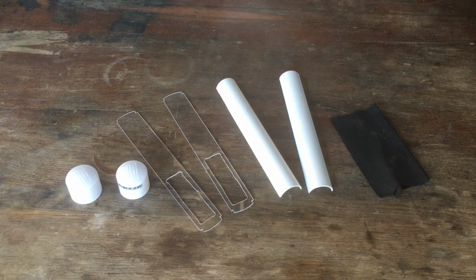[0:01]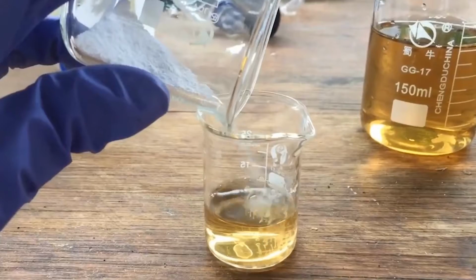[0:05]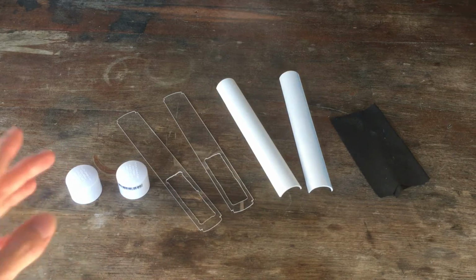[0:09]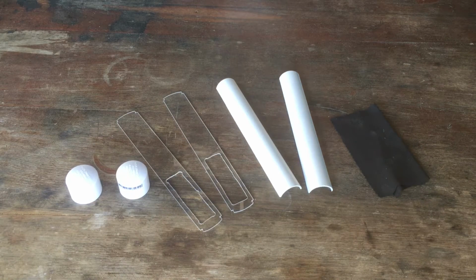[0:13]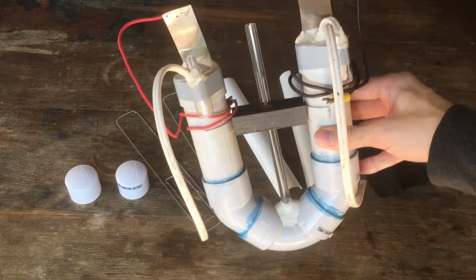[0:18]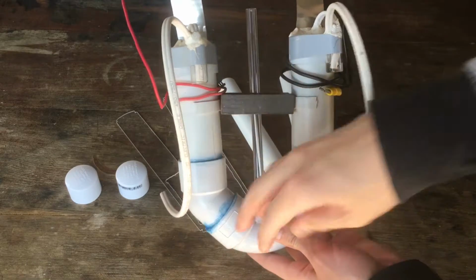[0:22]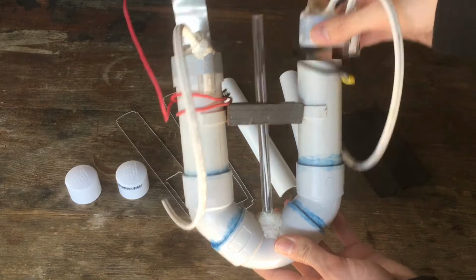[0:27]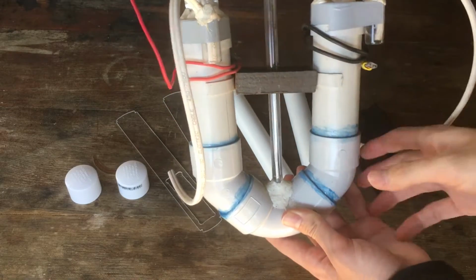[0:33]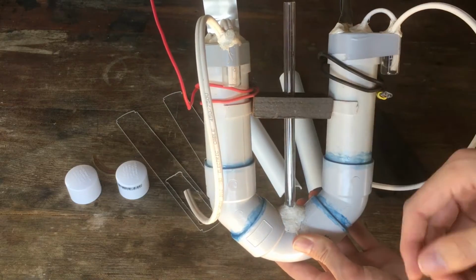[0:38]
Today what I want to do is revisit a really old project of mine. A couple of years ago, I think we put together this thing, which is a hydrogen generator, an electrolytic hydrogen generator. So we fill this PVC pipe chamber with sodium hydroxide solution. We have nickel electrodes which sit in the solution, and by passing current through the cell, we're able to generate hydrogen gas and oxygen gas off the cathode and anode respectively.
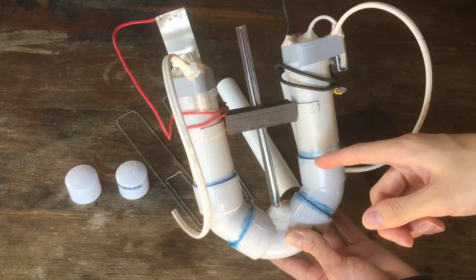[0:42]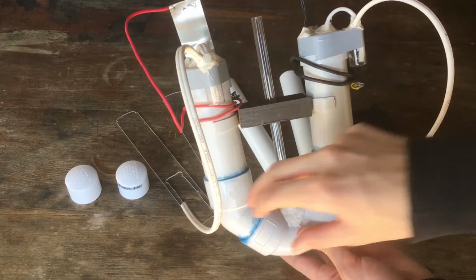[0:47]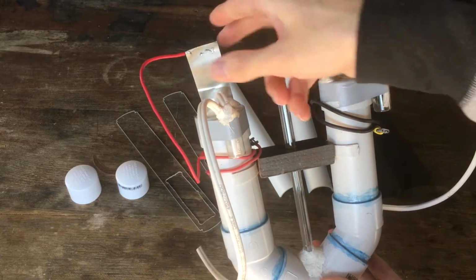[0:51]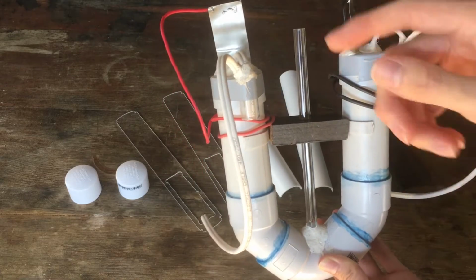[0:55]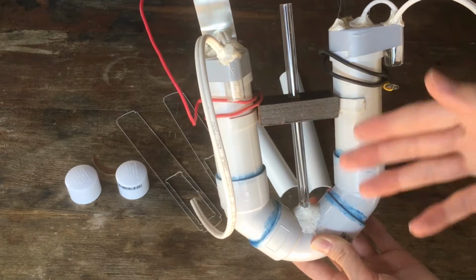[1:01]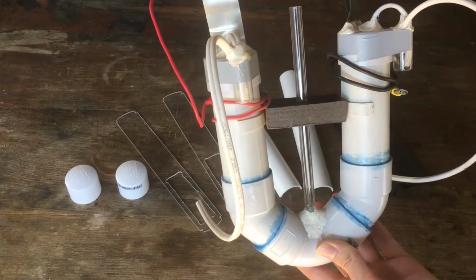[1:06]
Now, this was a relatively good design. I had a piece of fabric in between the two electrodes to stop the two gases from mixing, and the nickel electrodes that we were using did an excellent job at not corroding under the oxidizing conditions of the anode potential. I have used it a couple of times and it has worked for what it was intended to do, make hydrogen gas and oxygen for that matter.
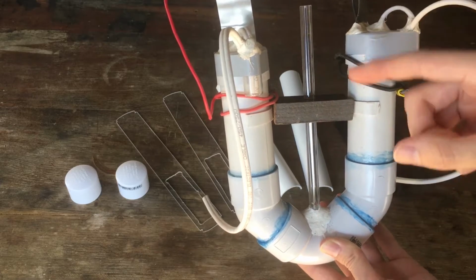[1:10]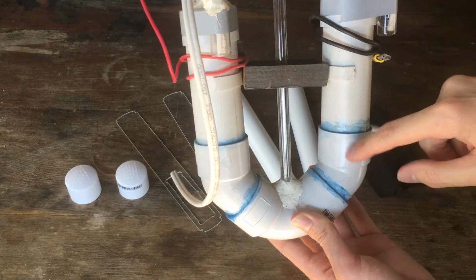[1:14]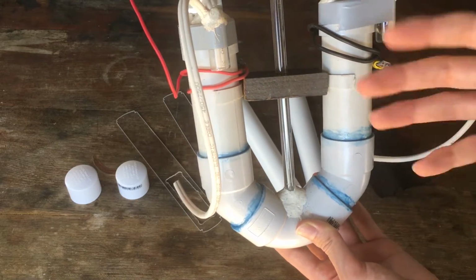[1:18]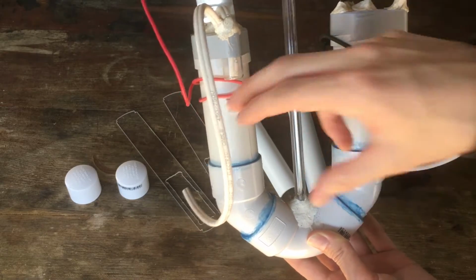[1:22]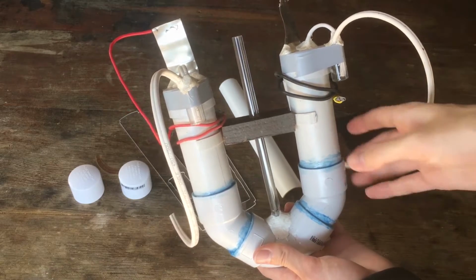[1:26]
However, the efficiency of this thing isn't great. Since we have a relatively large distance between the anode and the cathode, the resistance of the cell is higher than I'd like. We were able, I think from memory, to put a few amps through this thing at 5 volts. But in my opinion, I think this thing looks a little bit clunky, and I think we can do a much better job in terms of efficiency if we build something a little bit smaller than this.
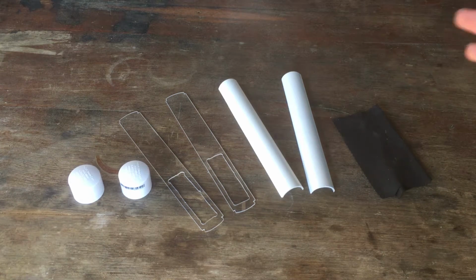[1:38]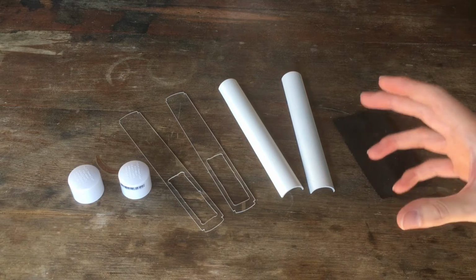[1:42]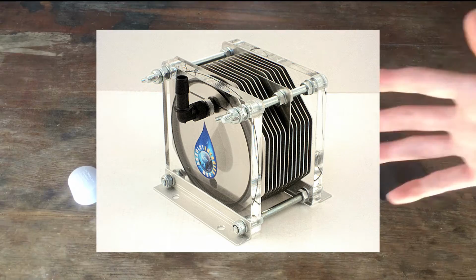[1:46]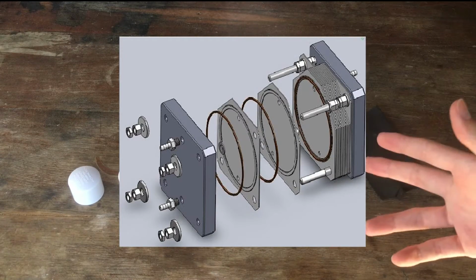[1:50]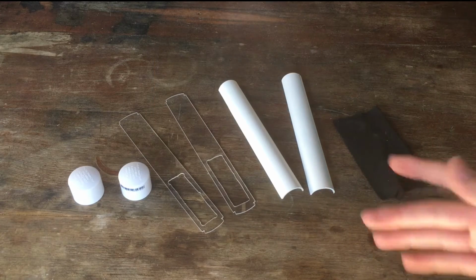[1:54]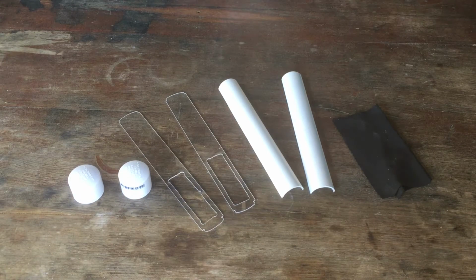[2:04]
Now, if I really wanted to generate hydrogen with a super high efficiency, what I could do is build what's called, I think, a dry cell. Those things are capable of generating a lot of hydrogen at a very high efficiency. However, to build one of them, you need a fair bit of stainless steel, and it's a little bit tricky to get the whole thing to seal and separate the hydrogen and oxygen. So I'm not going to bother. I'm not that good at engineering, and I don't really need that much hydrogen anyway.
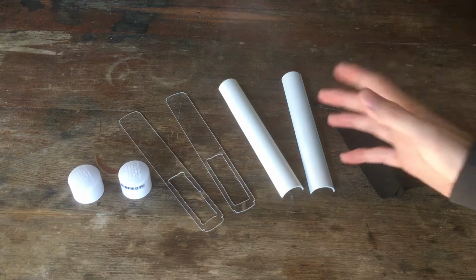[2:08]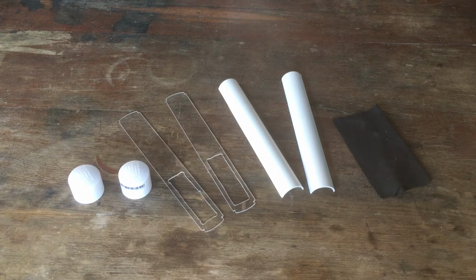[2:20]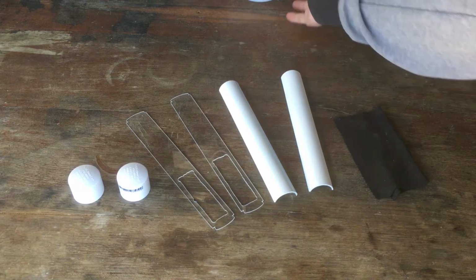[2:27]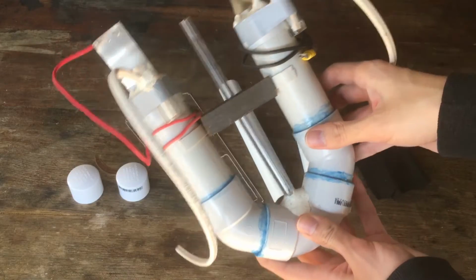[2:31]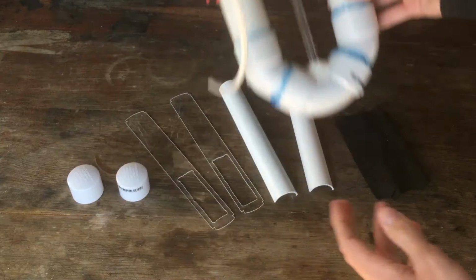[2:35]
So what I actually want to build is something with a moderate efficiency. I'm thinking maybe we want to be able to put 10 amps through the cell at 5 volts, or maybe 5 amps through the cell at 3.3 volts, something like that. And I want it to be convenient to put together, and that's what we've got set up today. What I'm currently thinking, instead of having this big ugly thing with two whole separate chambers for the hydrogen and oxygen, I'm thinking we can just have one of these chambers.
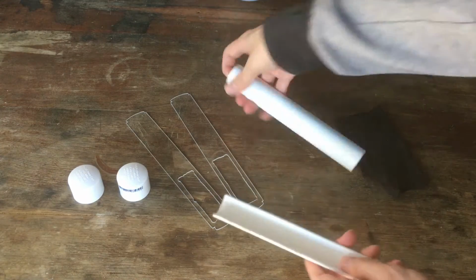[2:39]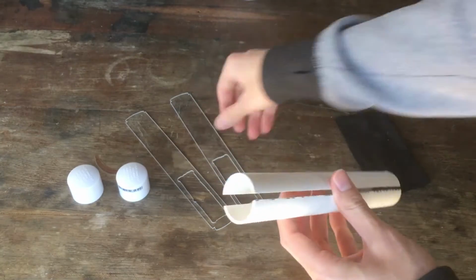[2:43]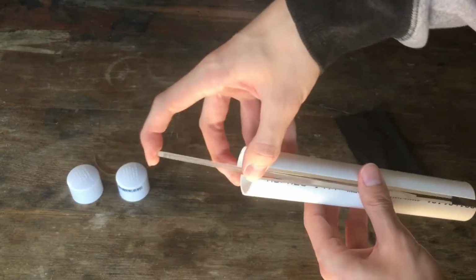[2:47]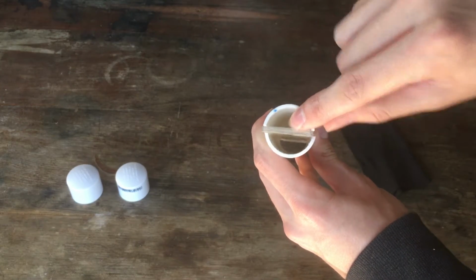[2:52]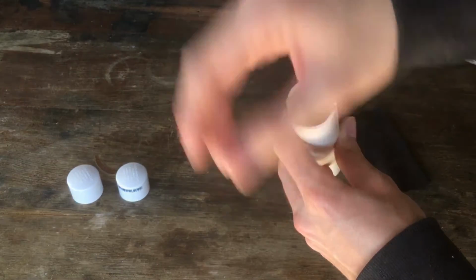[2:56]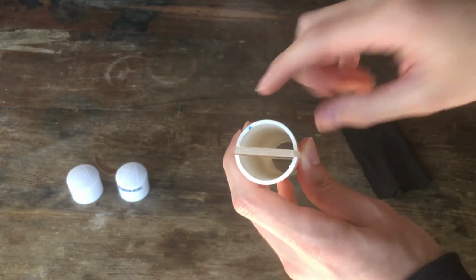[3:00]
So what I've got here is a PVC pipe cut in half, and what we can do is if we get a couple of pieces of acrylic, we can separate the two halves of the PVC pipe so that we can have hydrogen and oxygen generated separately and then have our gases taken off separately as well. So ideally, if I seal it right, there'll be no mixing of the gases.
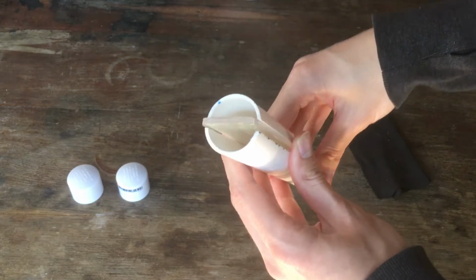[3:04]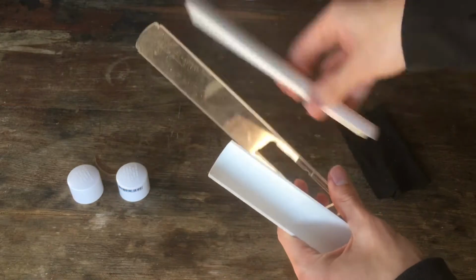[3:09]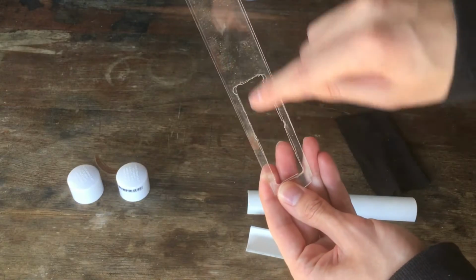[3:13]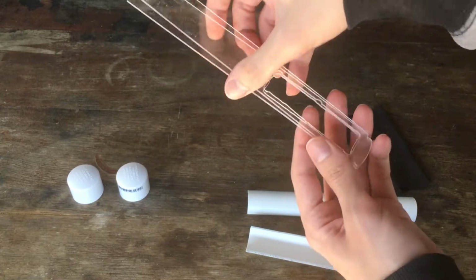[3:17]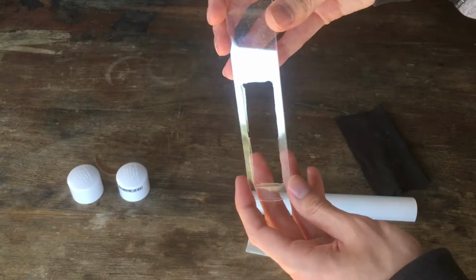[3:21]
Now, of course, we can't actually generate hydrogen and oxygen if the two chambers aren't connected in some way. So you can see in the pieces of acrylic that we have separated our chambers with, I've put a hole in here, and what we're going to do is put a small piece of fabric just between those two pieces, and that will prevent any gases mixing between the two chambers, hopefully.
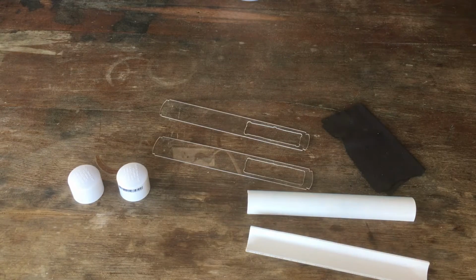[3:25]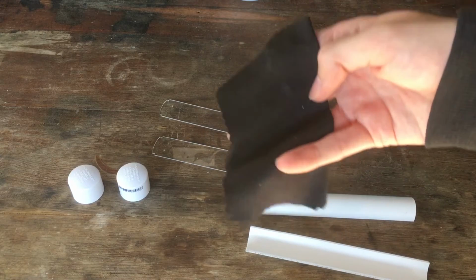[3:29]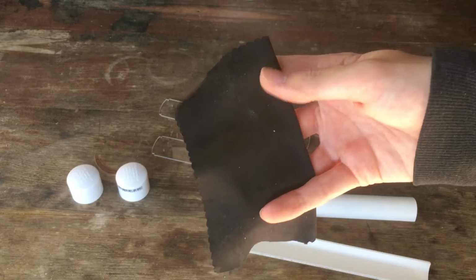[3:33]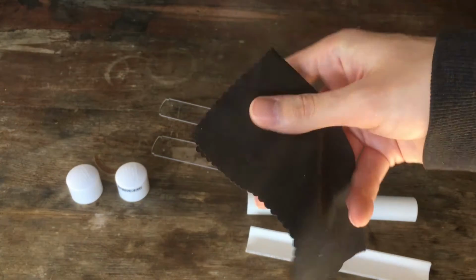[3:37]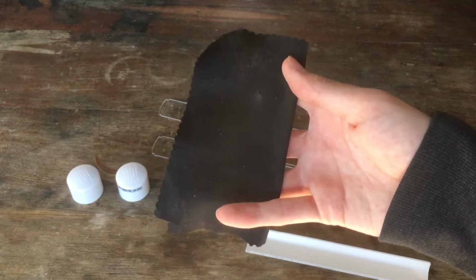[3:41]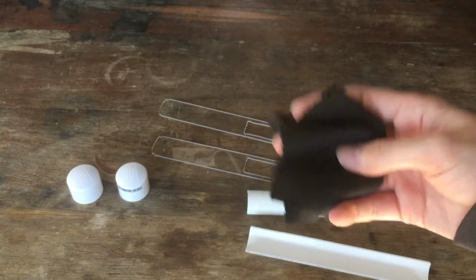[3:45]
The material that we're going to use to separate the two chambers is microfiber, because it's a very finely woven fabric which will easily stop any bubbles from transferring between the two chambers, and it's made out of polyester and nylon, which is ideal because they don't really react or break down in the presence of sodium hydroxide, which is the electrolyte that we're going to be using.
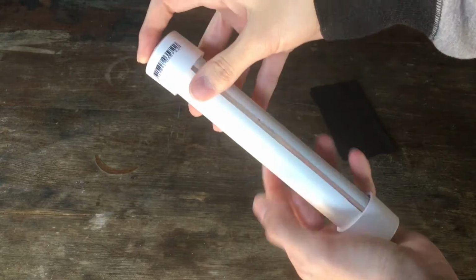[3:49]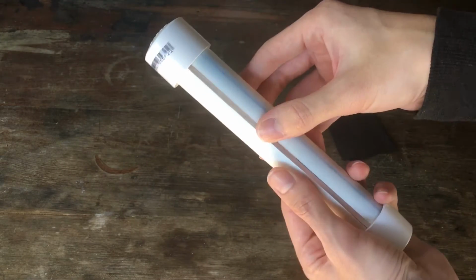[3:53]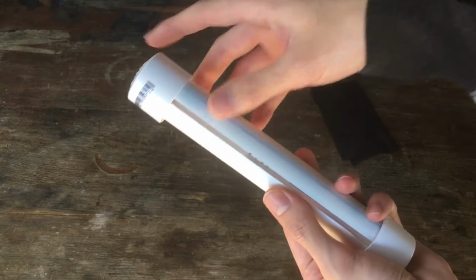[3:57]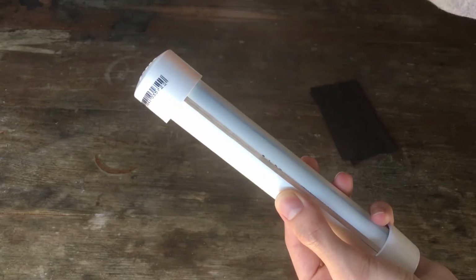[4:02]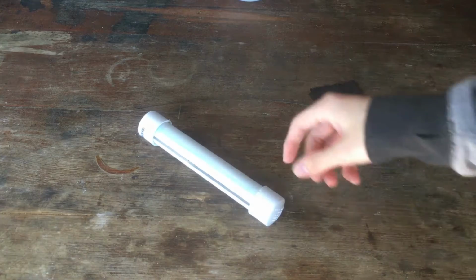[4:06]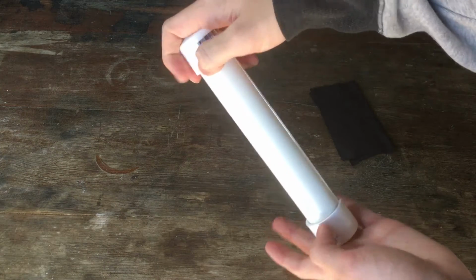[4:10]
So overall, it's going to look something like this in the end. Of course, it'll be all sealed when I'm done. The two chambers are separated by the acrylic, as you can see, and we'll have our electrodes going in the sides, our gas takeoff maybe up the top. I don't know, we'll work that out while I build it. I think that'll be relatively nice, pretty efficient. It's got a nice small form factor, so I think it should work quite well.
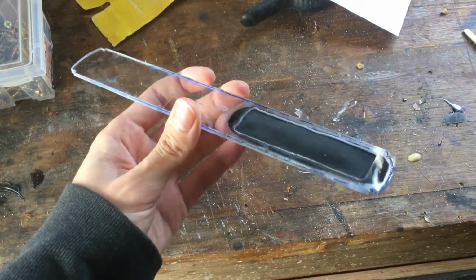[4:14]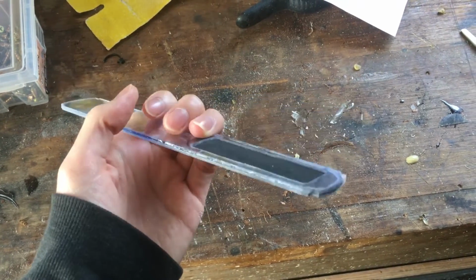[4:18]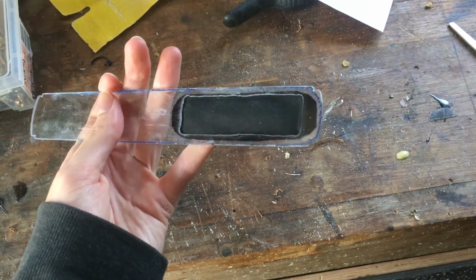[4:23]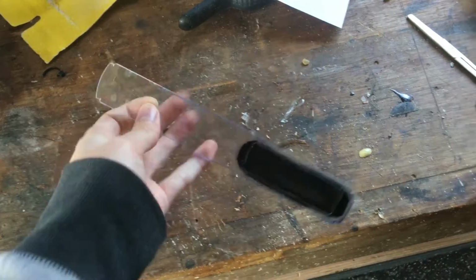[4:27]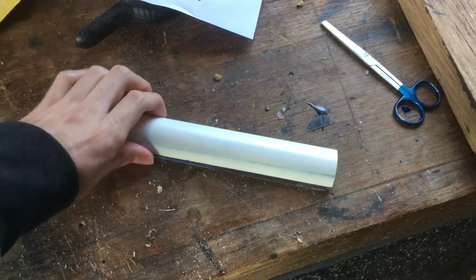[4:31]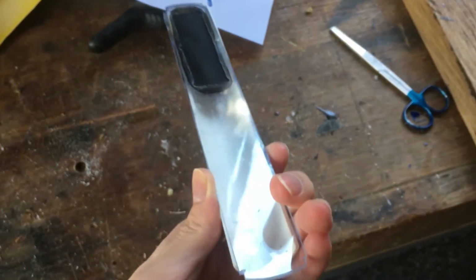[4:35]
All right, that's the first step done. I've got those two pieces of acrylic sealed together with the piece of microfiber cloth in between them as our separator. The next step is to put on the next parts of the cell in order to make the two chambers for the hydrogen and oxygen. And then there we are, the next step.
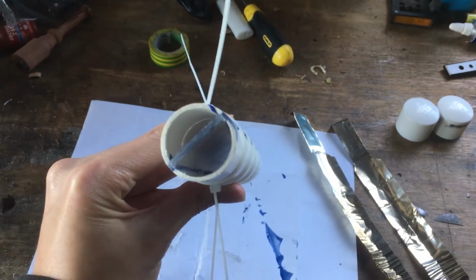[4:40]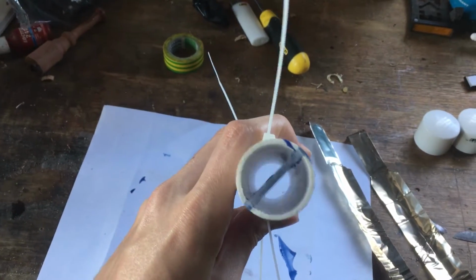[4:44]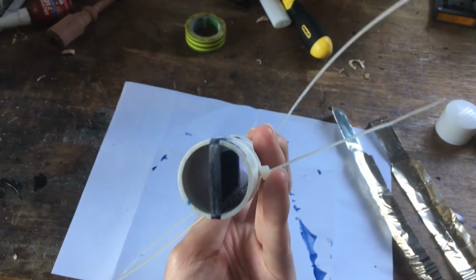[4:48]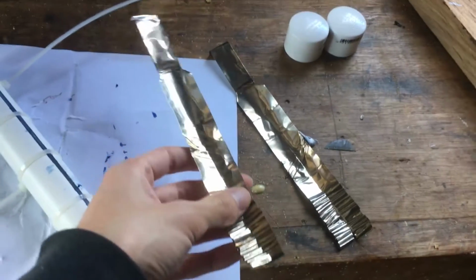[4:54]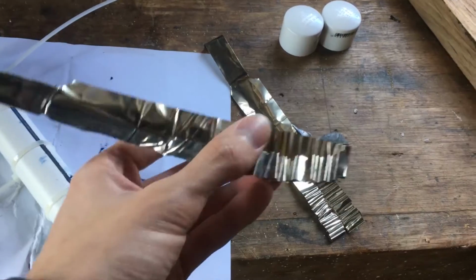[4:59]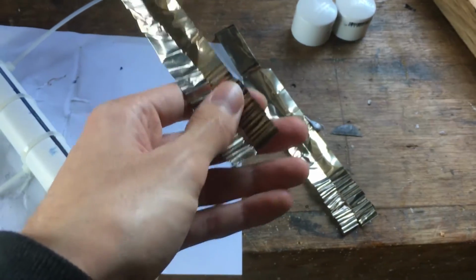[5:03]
I'm now sealing the PVC onto that acrylic separator. If we look down through there, you can see the two separate chambers. You can see the fabric separator separating the two halves. And I've also prepared our electrodes. I just took the nickel out of the previous hydrogen generator. What I've done here is just folded up the ends so that we have a nice high surface area down here.
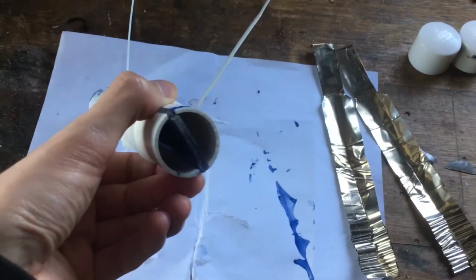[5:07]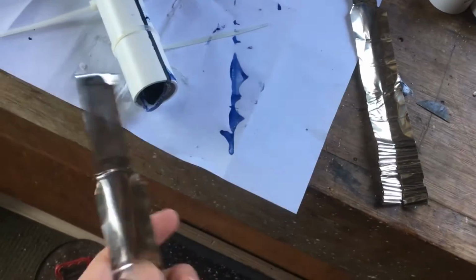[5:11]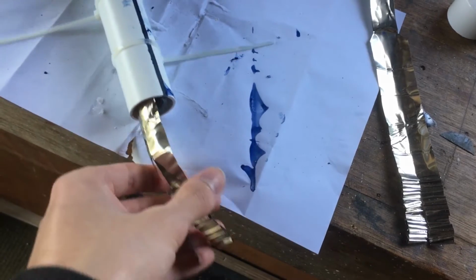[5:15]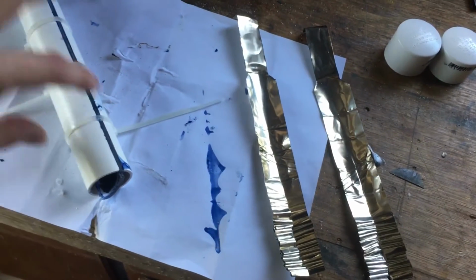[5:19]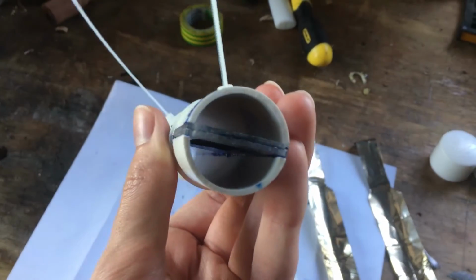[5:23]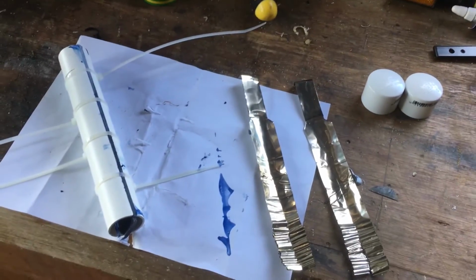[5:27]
This is the bit that's going to be right next to the fabric separator. We will put these straight into the cell, just like that. And then eventually, once I actually put them in there, they'll be sitting nicely close together so that we can get a nice high current between the hydrogen and oxygen sides.
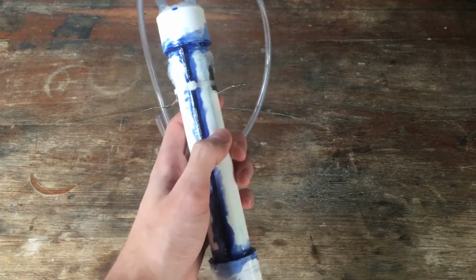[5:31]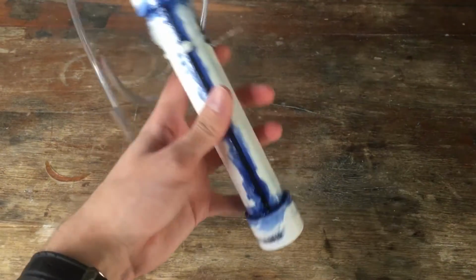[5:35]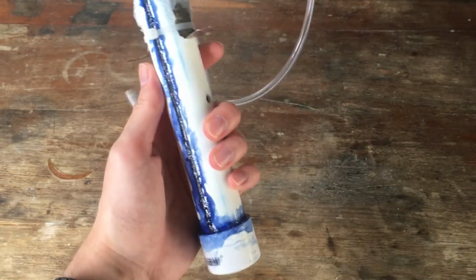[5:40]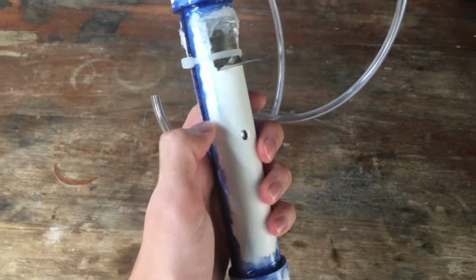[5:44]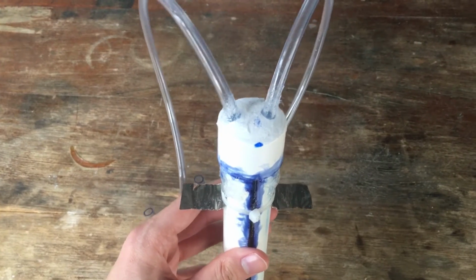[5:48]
Finally, there we go, it's all sealed. We have the left and right chambers sealed up completely. We have the top sealed on, the bottom sealed on. We've got both electrodes, positive and negative, down into each of the chambers. I've drilled a hole in the side so that we can fill the thing up with solution. And we have our two output tubes for the hydrogen and oxygen gases that we'll be generating.
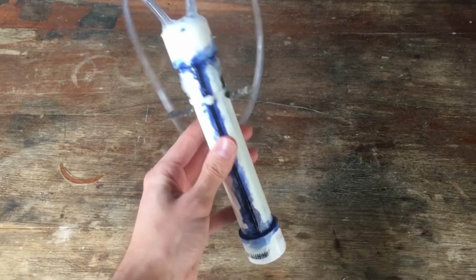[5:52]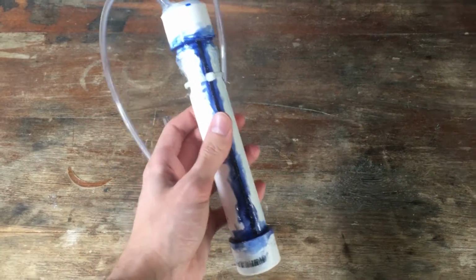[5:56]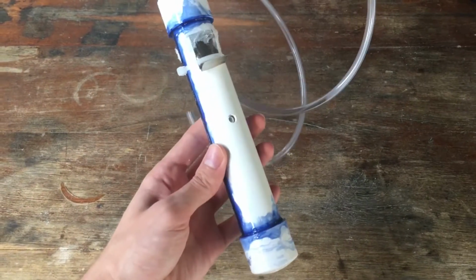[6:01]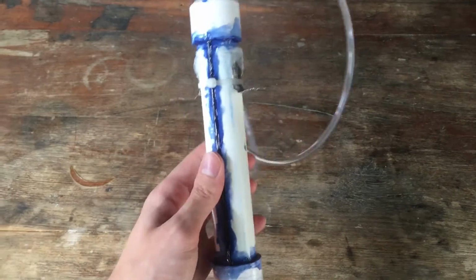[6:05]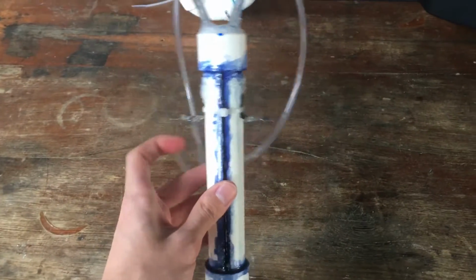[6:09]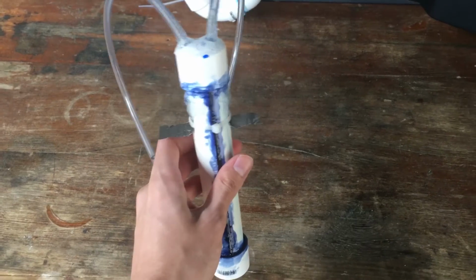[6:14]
The only thing left to do now is to fill it up with water and double check that we don't actually have any leaks. I'm pretty much positive that we don't, because I've used a vast excess of this PVC solvent glue to seal up the whole thing. But we'll check anyway, because that's the smart thing to do. Then I will solder some wires onto our nickel strips, and then we can finally get to making some hydrogen and oxygen gases.
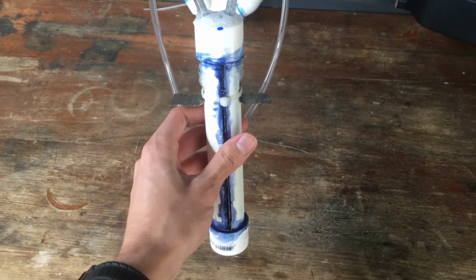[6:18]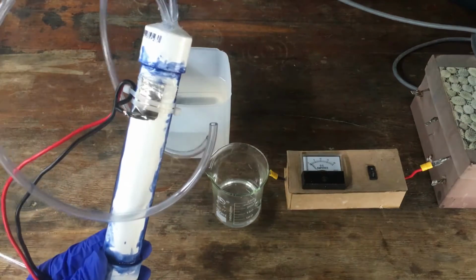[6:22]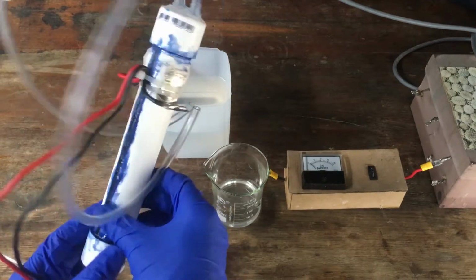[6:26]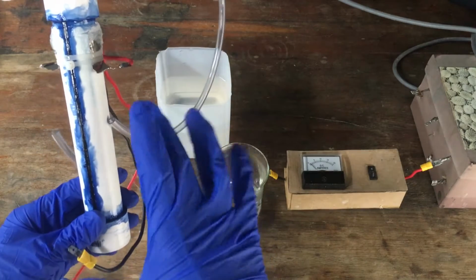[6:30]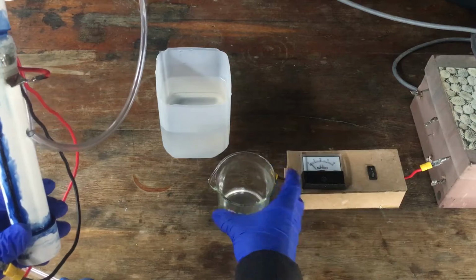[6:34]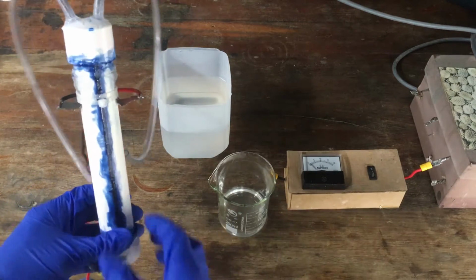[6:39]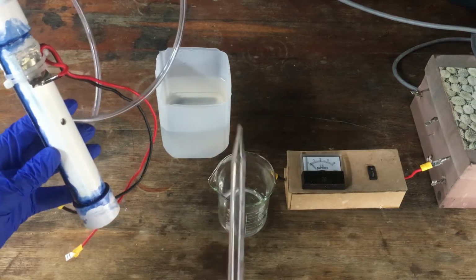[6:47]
So, as it appears, there are no leaks in our device, which is good, and I have determined that the total volume of the chamber that we need to fill it up to is around about 60 milliliters. So I've prepared here a 25% solution of sodium hydroxide, 60 milliliters of it, and I will transfer this solution into our chamber here through the hole that I've drilled, just using a pipette.
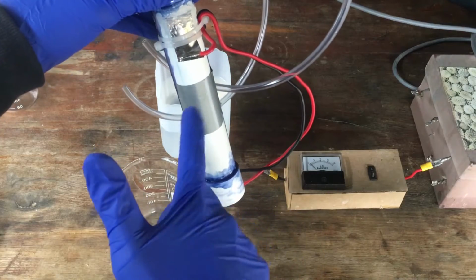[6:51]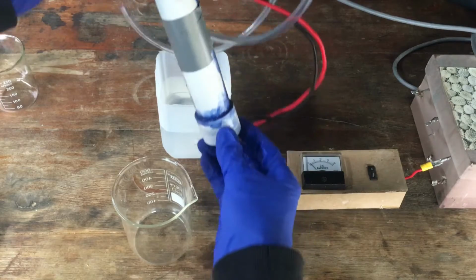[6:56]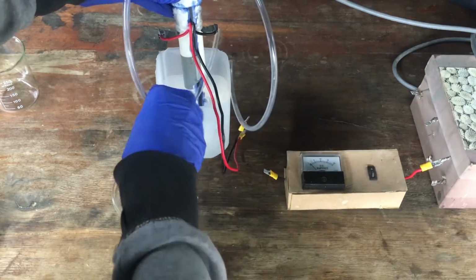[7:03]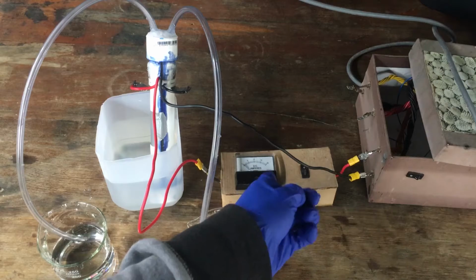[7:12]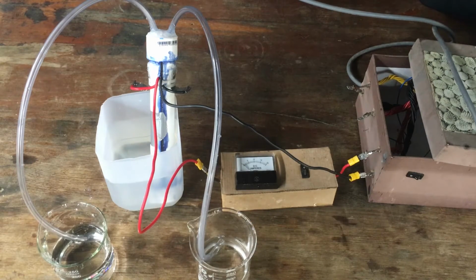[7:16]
Alrighty, now that is filled with our solution, and I have covered over the filling hole with a piece of duct tape. All we're going to do now is put it into a cooling bath, because this thing is probably going to get hot when we actually perform our electrolysis. And then finally, connecting up the whole system to 3.3 volts from a computer power supply with an ammeter in series, so we can see how much current we can actually push through this electrolyzer. We will turn on the current and see if it actually works.
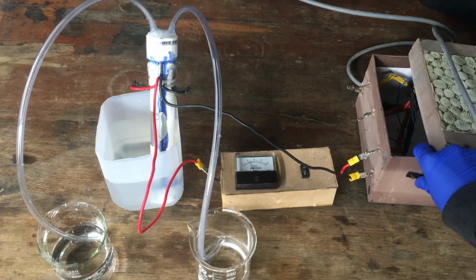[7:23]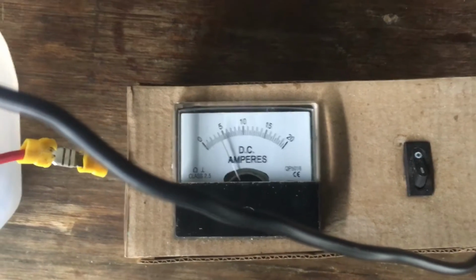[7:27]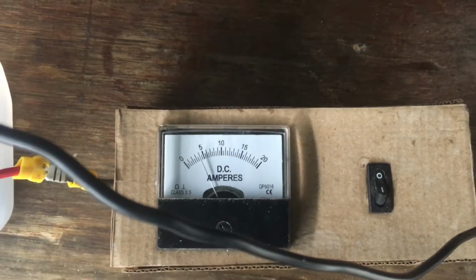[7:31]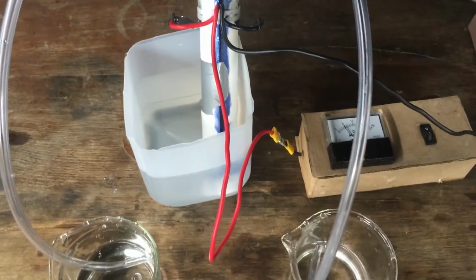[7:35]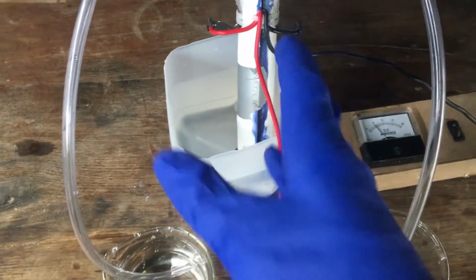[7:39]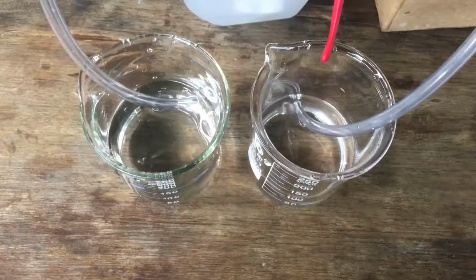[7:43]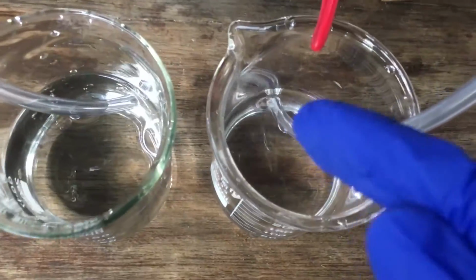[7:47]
Wow. As you can see, initially at 3.3 volts, we can push around 4 amps through the cell, which is actually a lot more than I was expecting. That current should even increase as the cell heats up, because we are pushing 12 watts through it currently, even more than that. I'm also leading the gases into a couple of beakers full of water so that we can see the production rate. You can see this is the hydrogen.
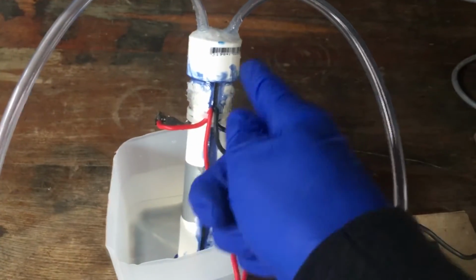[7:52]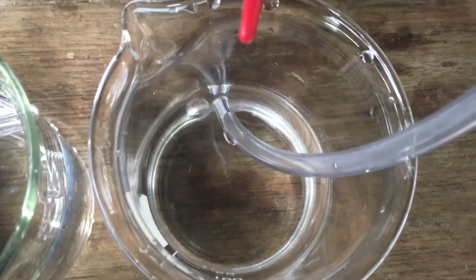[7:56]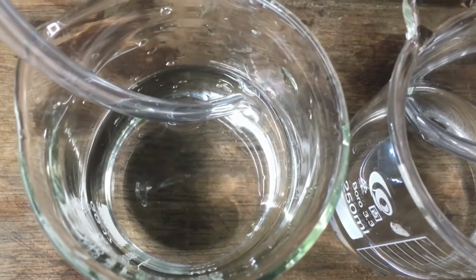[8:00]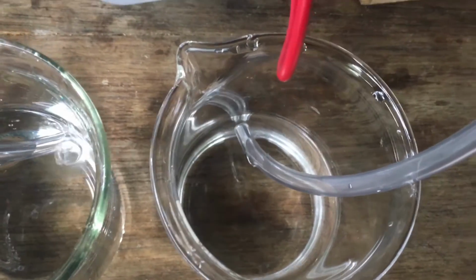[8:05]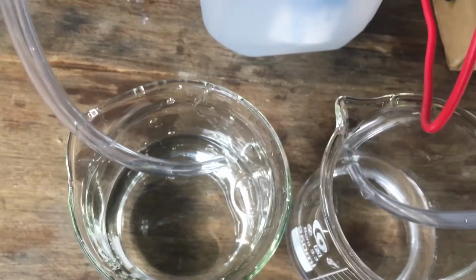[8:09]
On the right hand side is our negative electrode, so our hydrogen comes out on the right hand side here. We are generating quite a bit of gas there. And oxygen, of course, is being generated at half the rate. You can see that for every two bubbles that the right hand side makes with the hydrogen, we only get around one bubble for the oxygen.
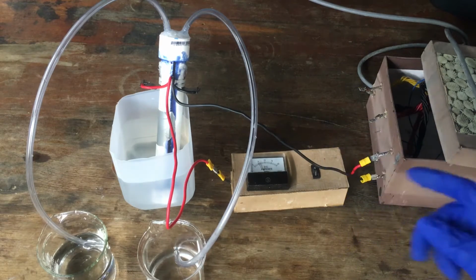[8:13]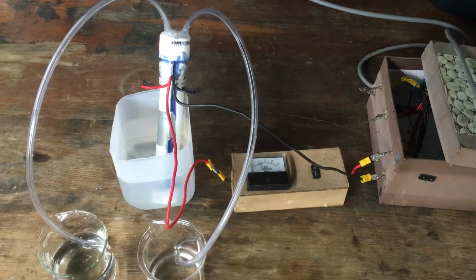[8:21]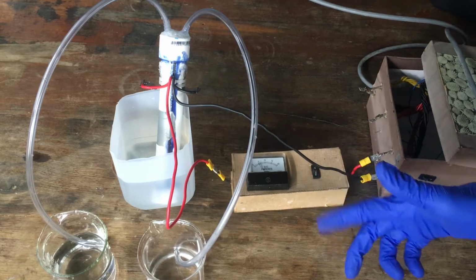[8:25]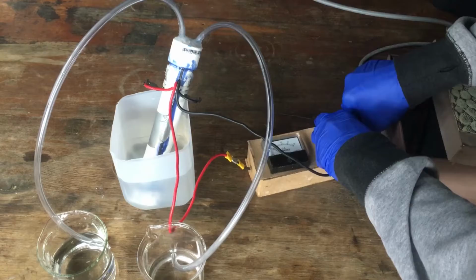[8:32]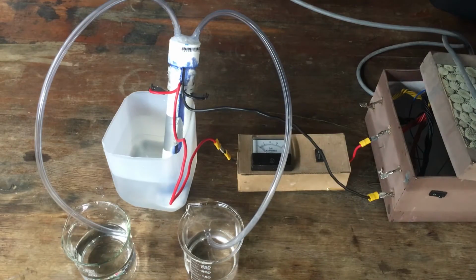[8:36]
Now, what I really want to know is, how well will this thing run at 5 volts? Because at a higher voltage, we're able to put more current through the cell, and the current is what determines the gas rate of production. So applying 5 volts should drastically increase the amount of gas that we get. So we'll give that a go now. Okay, 5 volts, watch the ammeter, and we will see how much current we get.
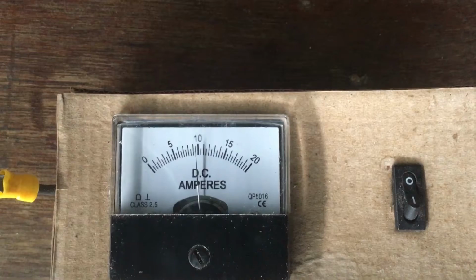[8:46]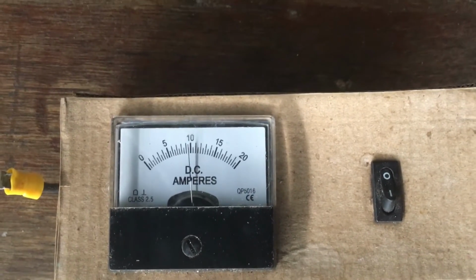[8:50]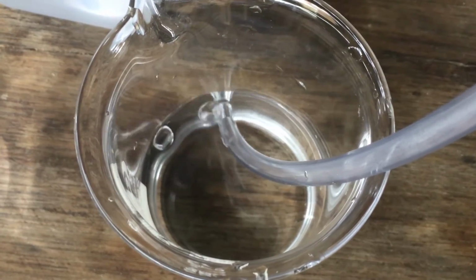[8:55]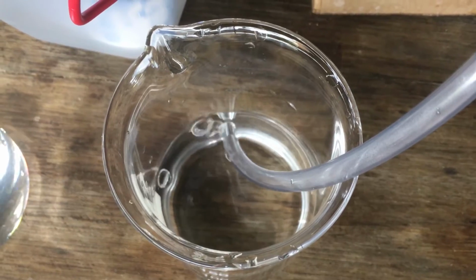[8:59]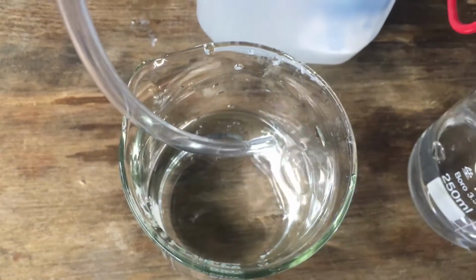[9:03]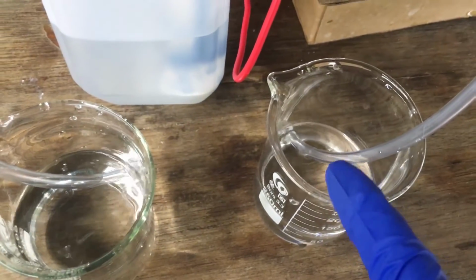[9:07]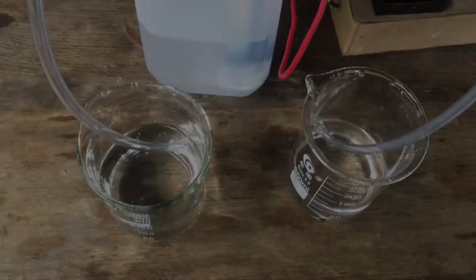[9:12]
Wow. At 5 volts, it looks like we get a whole 9.5, nearly 10 amps, which gives us a lot of hydrogen. Look at that, holy moly. The oxygen rate of production has also increased now that we've pumped it up to 10 amps. It is, as we expect, still half of the gas production of the hydrogen. But overall, that is a lot of gas being generated.
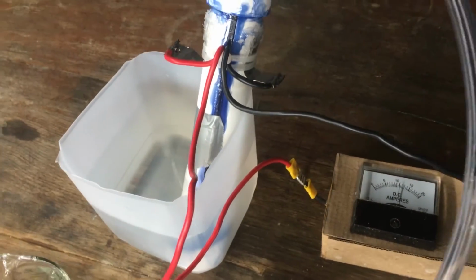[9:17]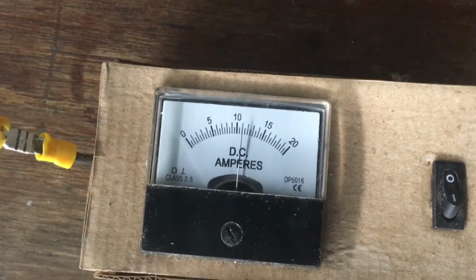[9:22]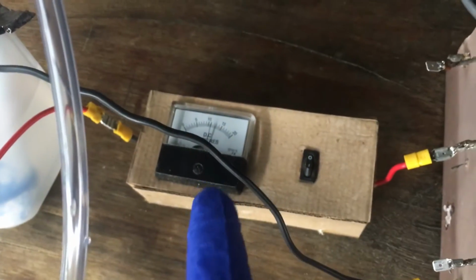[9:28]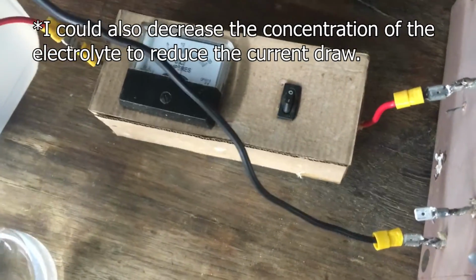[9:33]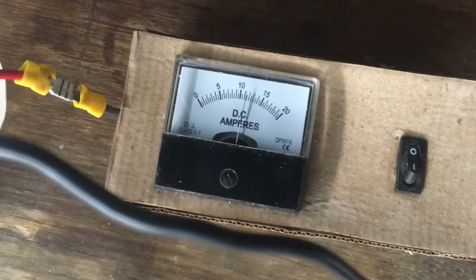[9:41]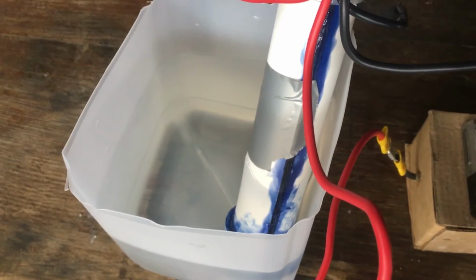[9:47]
Well, look at that. After just a minute of allowing the cell to run at 5 volts, the 50 watts that we're putting through the cell has heated it up to the point where now we're allowing a lot more current to flow. We've got 11 amps after just a minute. I'm not really a fan of that happening. I think I'm going to put it back to 3.3 volts. If we let that run away to too high of a temperature, I'm worried that these wires won't be big enough to run the full maybe 15 amps that might flow through in the end. And we also don't want to make the cell too warm. That is a very concentrated solution of sodium hydroxide in there, and we don't want that to spill everywhere.
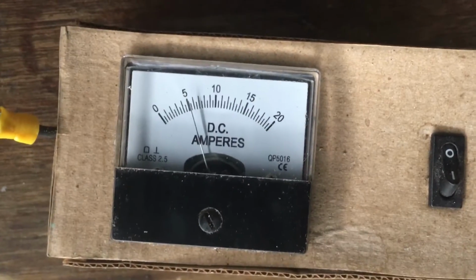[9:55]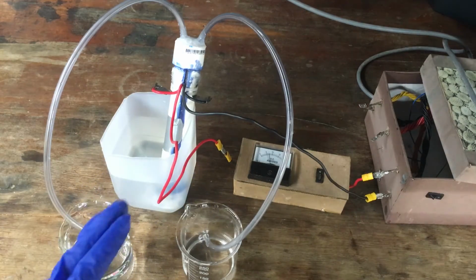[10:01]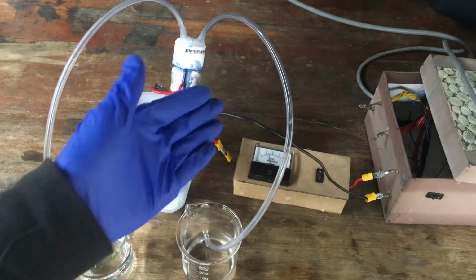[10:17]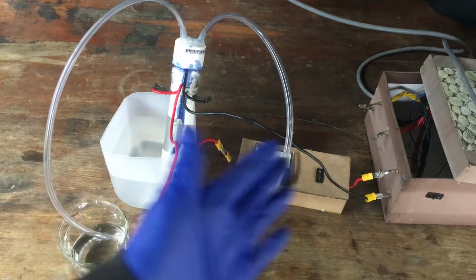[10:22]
Yes, I think 5 amps at 3.3 volts is a nice rate of production. As a matter of fact, running it at a lower voltage also increases the efficiency of the process, or at least the energy efficiency, because technically only 1.23 volts worth of the total voltage that you put across the cell can actually go towards the chemical reaction of generating hydrogen and oxygen. So at 3.3 volts, 1.23 volts is a larger fraction of that total voltage than when we run it at 5 volts.
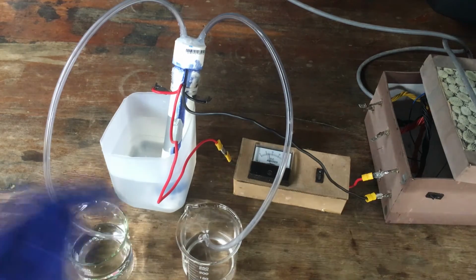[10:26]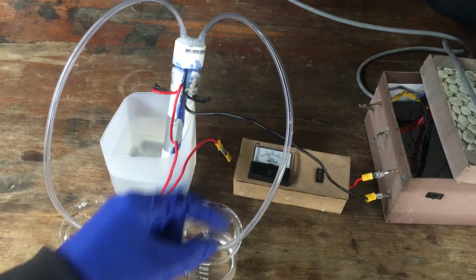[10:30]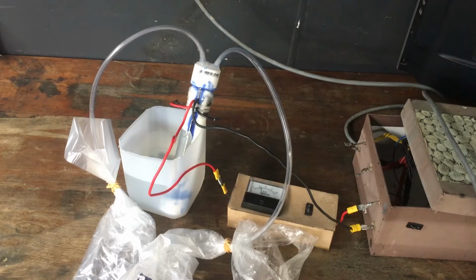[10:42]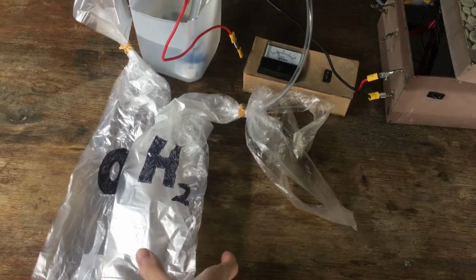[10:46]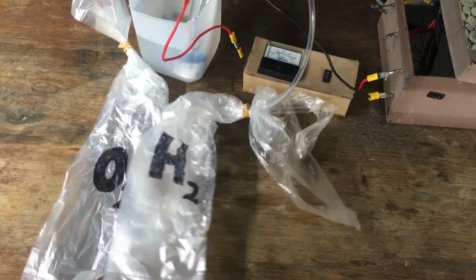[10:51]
Anyway, what I want to do now is grab a couple of plastic bags and tie them onto the ends of our tubing and see if we can fill them up with the hydrogen and oxygen that we're generating. Once we've filled up a bag of hydrogen, of course, because it's lighter than air, it should actually float. Alrighty, with the cell running at 5 amps, it should take just a few hours to fill up our bags.
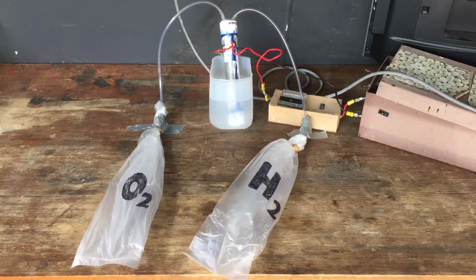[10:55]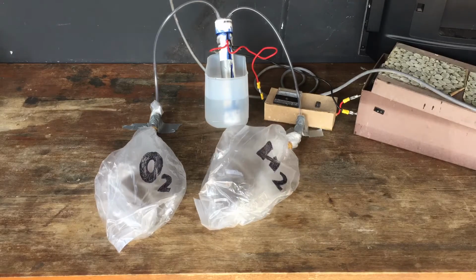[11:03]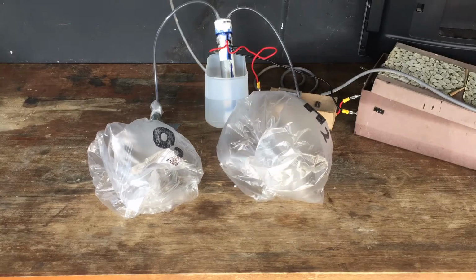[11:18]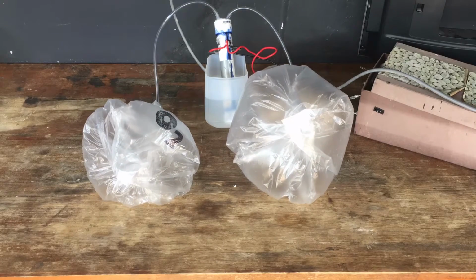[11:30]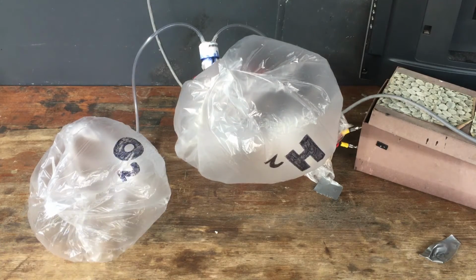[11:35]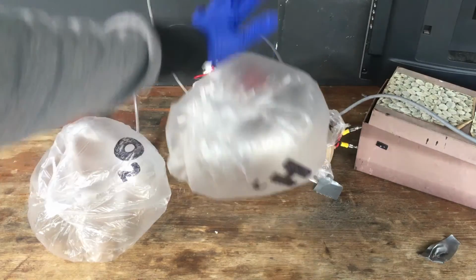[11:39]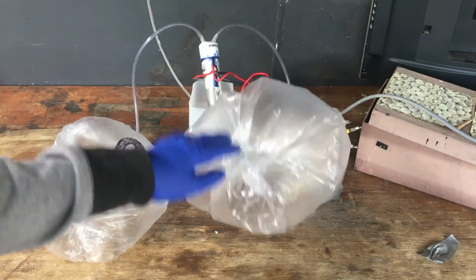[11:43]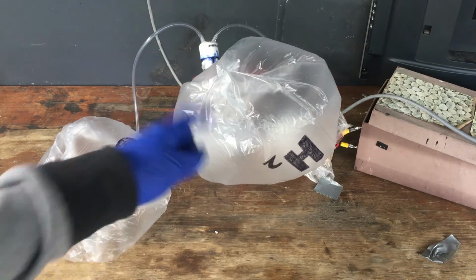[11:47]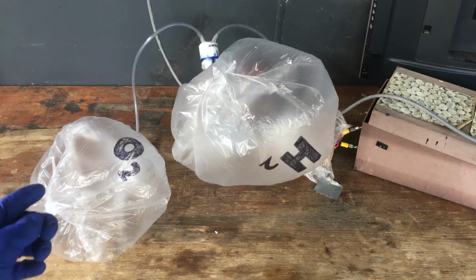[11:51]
Well, there we are, hydrogen and oxygen made by electrolysis of water. You can see we have enough hydrogen now that it is trying, at least, to get off the ground and float. So I think we've got enough of the gases for our initial test. I will disconnect those and turn off the cell, and then we will examine how everything went.
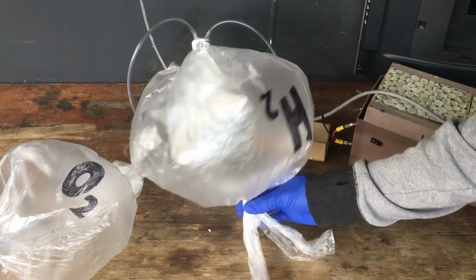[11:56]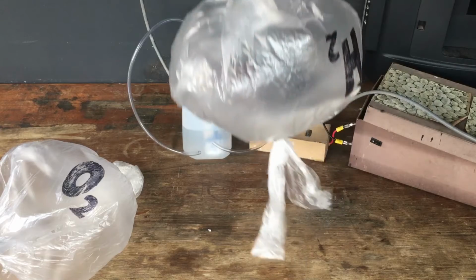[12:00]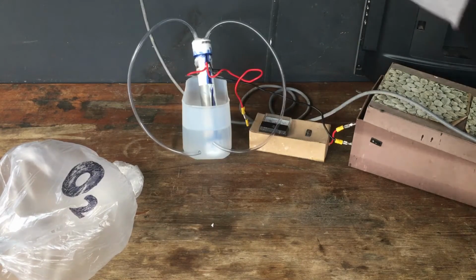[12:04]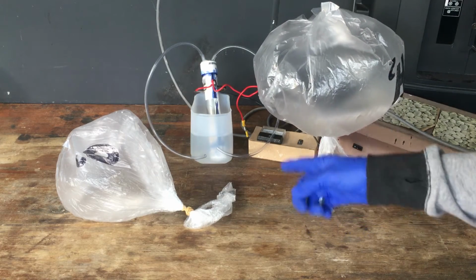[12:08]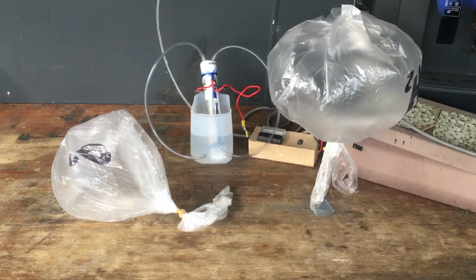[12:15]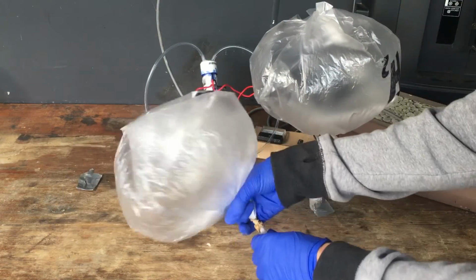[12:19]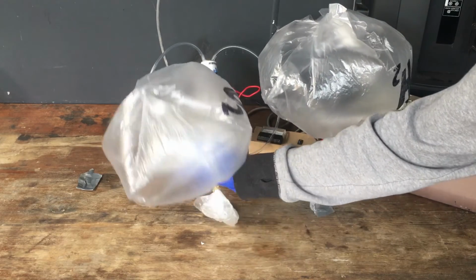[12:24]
And there we are. As you can see, we have enough hydrogen such that our plastic bag actually floats off the ground. Very cool. So yes, after about 5 hours of electrolysis at 4.5 amps, 3.3 volts, we have filled these bags with the two gases. We expected to obtain about twice as much hydrogen as oxygen. You can see that there is more hydrogen in our bag on the right than there is oxygen in our bag on the left here.
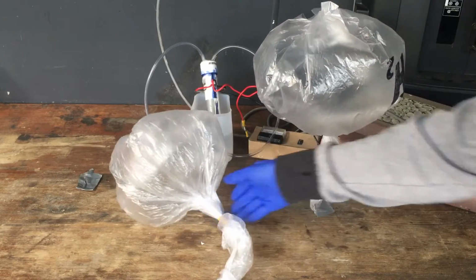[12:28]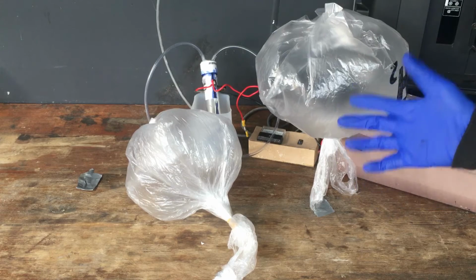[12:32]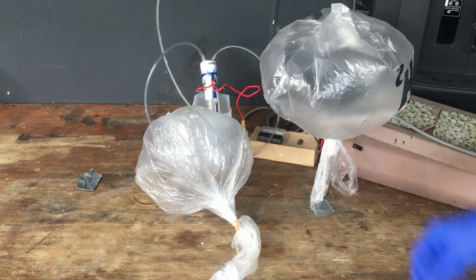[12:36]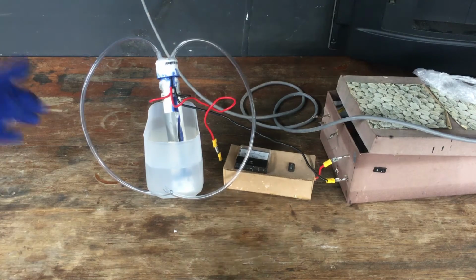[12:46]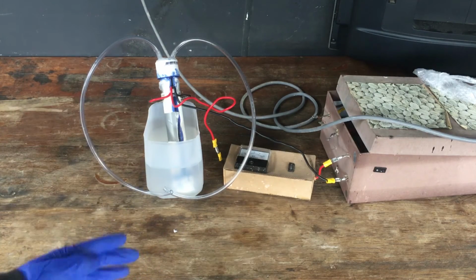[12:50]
However, it's not quite a ratio of 2 to 1, it looks like. That's probably because hydrogen is such a small molecule that it can actually escape our plastic bag quite easily. So we lose a fair bit of it in the process. We possibly generated quite a bit more hydrogen than we see here, but a large part of it did actually escape.
Now that that's all done, a couple of things that we have noted from actually running the cell in practice. First of all, is something that I didn't consider when building the thing, but it is actually very important, especially when we're running at such a high current. That is the fact that we are converting the water into hydrogen and oxygen at a non-negligible rate. So we're actually going to run out of water inside the chamber quite quickly.
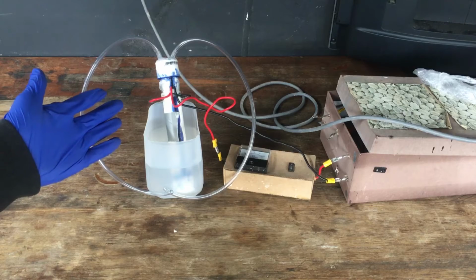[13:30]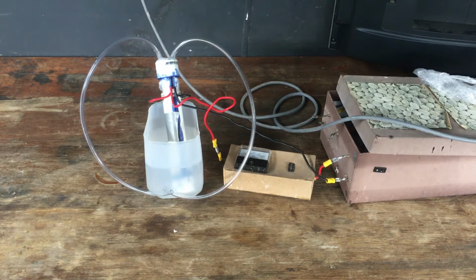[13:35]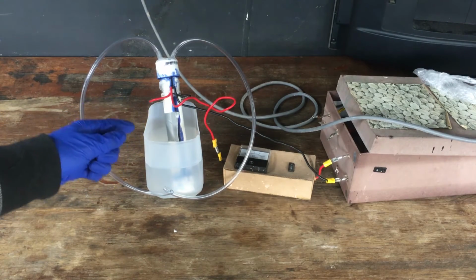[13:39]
At around 5 amps running through the cell, it turns out we actually lose a few milliliters of water every hour, which, when we only have 60 milliliters of solution in the chamber to begin with, is quite a significant loss. So if we were to run this for 10 hours, we might start losing a significant portion of our solution. Pretty easy to solve the problem though. When I run this cell in the future, all I'm going to have to do is check up on it periodically every few hours and top it up with some distilled water.
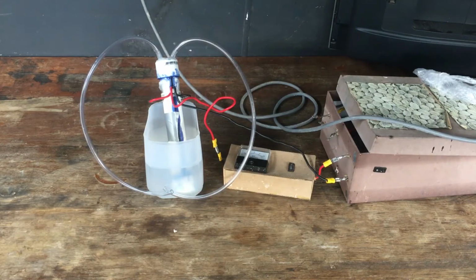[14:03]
That'll be especially important if I decide to run it at 5 volts and at that 10 amps that we were seeing initially. The second thing is a design feature that I probably should have added from the start, but I just couldn't be bothered doing it. I was excited to actually run the cell and check whether it worked.
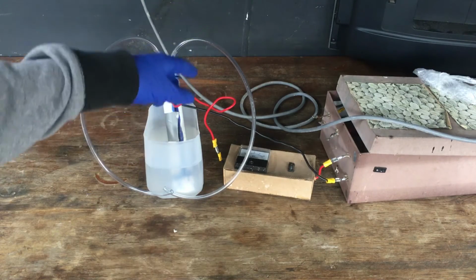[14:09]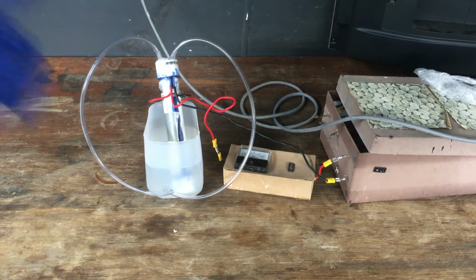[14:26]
That is adding a couple of bubblers on the side of the cell so that we can see the gas flow rate of the hydrogen and oxygen as they come out of the cell, and also to act as a flashback arrester for the hydrogen, just in case any of the hydrogen ignites. We don't want the ignition reaching its way all the way into the chamber, because that would be a disaster. Not that the hydrogen would ignite just on its own anyway, but it's good to be safe.
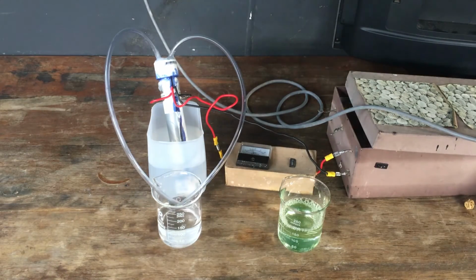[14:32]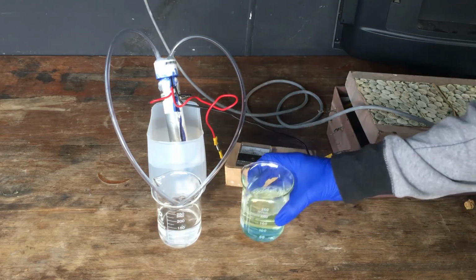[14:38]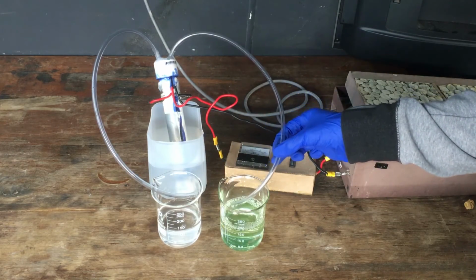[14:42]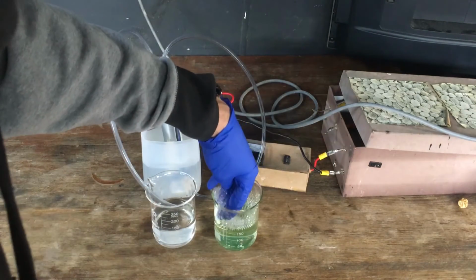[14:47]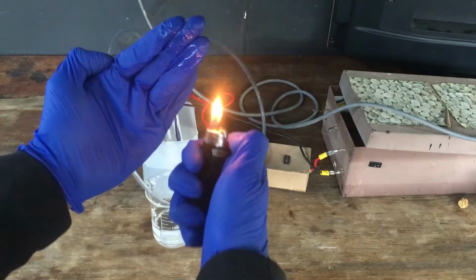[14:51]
But before we finish up for the day, there is of course one other famous experiment with hydrogen that we can do, and that is to get a bunch of soapy water and make a whole bunch of bubbles with it. And then once we have some bubbles, they are of course flammable. I know you wanted to see me light off the big bag, but no, that's not happening.
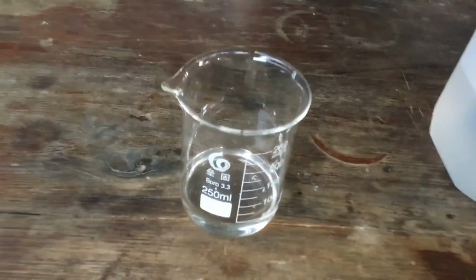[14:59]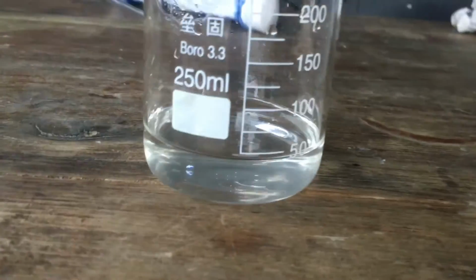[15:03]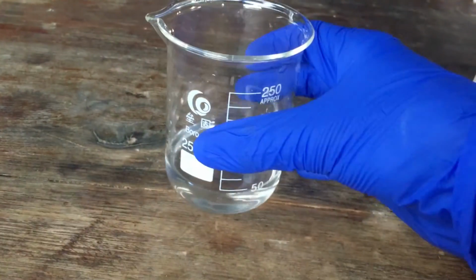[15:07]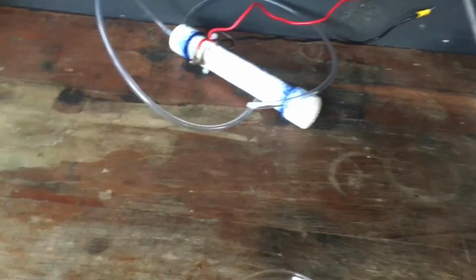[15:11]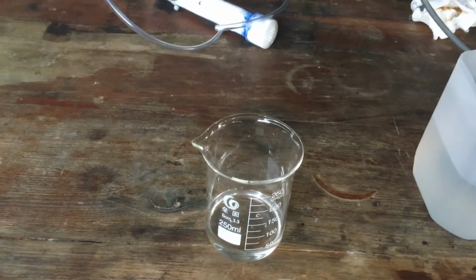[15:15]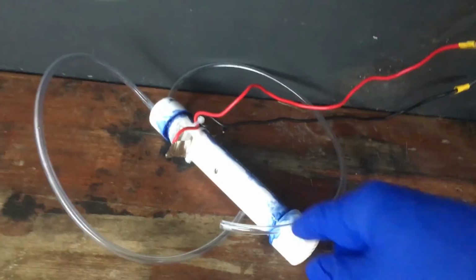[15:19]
And just as a final note, you can see this is the electrolyte now that I've removed it from the cell, and we have a little over 40 milliliters left. So we were right on the fact that the water was being destroyed by the cell. We started with 60 milliliters and we destroyed over 10 milliliters of that. So we are going to have to think about that in the future when we run the cell.
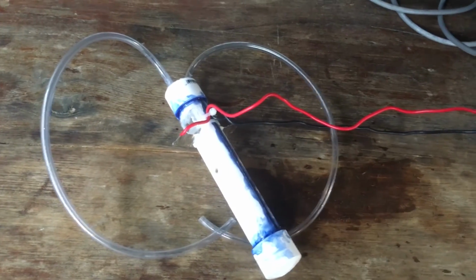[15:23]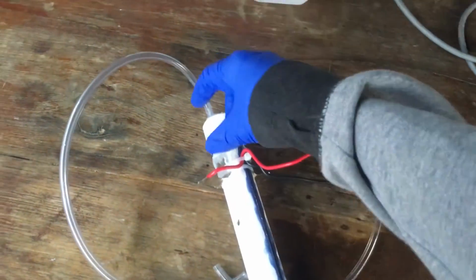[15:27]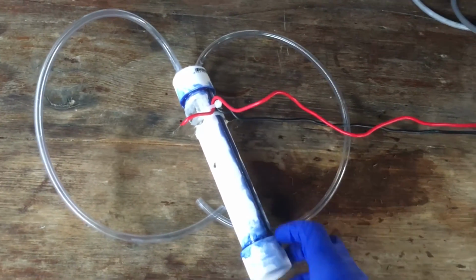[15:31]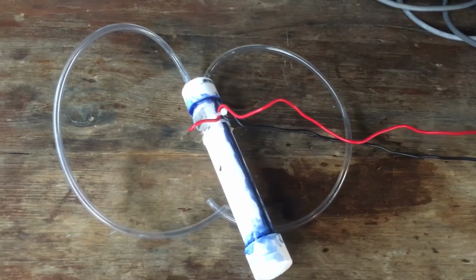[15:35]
But anyway, that is that. We've finished our hydrogen generator. I'm happy with how it works. I'm happy with how it runs. All it needs are a couple of bubblers for the hydrogen and oxygen gases as they come out of the chamber. But that is pretty much completely finished.